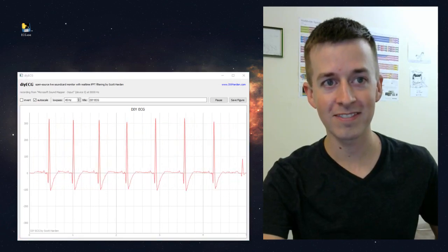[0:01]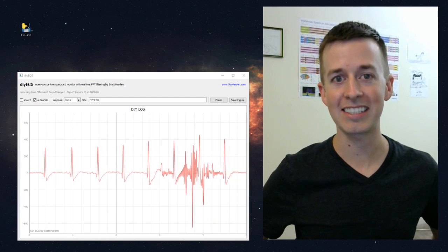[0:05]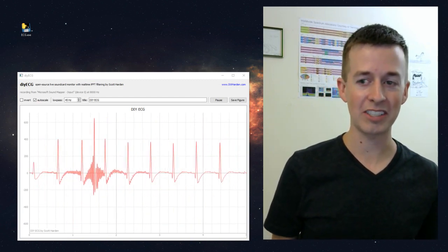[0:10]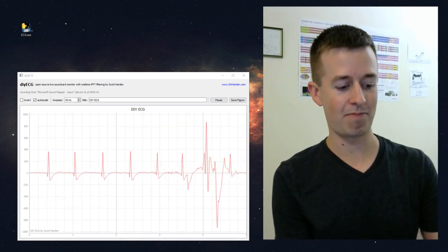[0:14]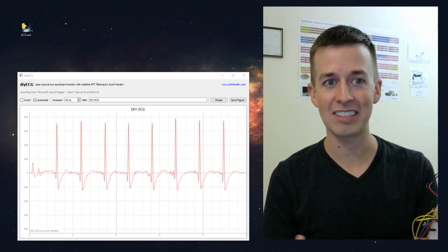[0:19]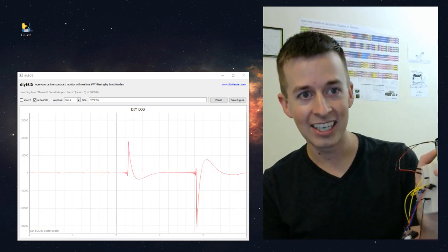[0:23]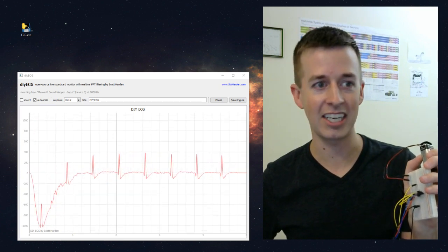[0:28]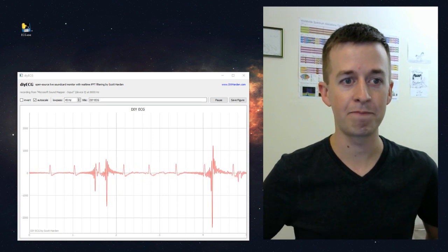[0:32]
Hi, I'm Scott Harden, and on the screen you're looking at my electrocardiogram, or my ECG. And this is a live recording of the electrical signals being produced by my heart. And as I move around and handle the circuit, you can see that sometimes noise gets in the signal, but that's extra proof that this is a real live signal. I can unplug it and plug it back in, and the vertical autoscaling takes a minute to do its thing. But this is a live signal looking at the electrical potential of my heart.
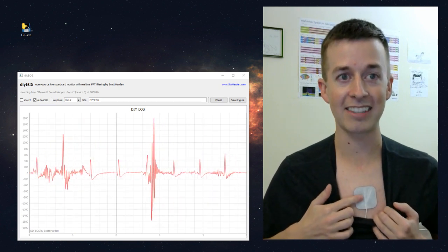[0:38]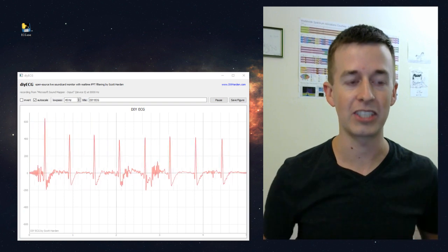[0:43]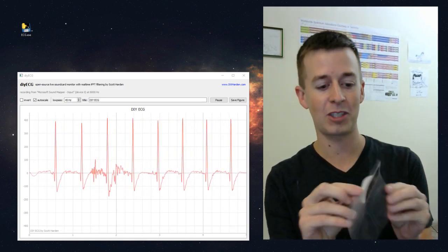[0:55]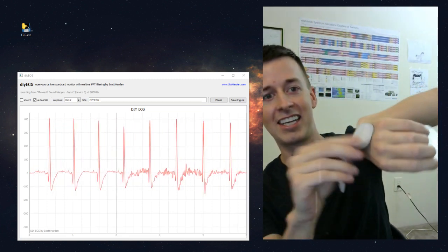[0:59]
It's accomplished by chest electrodes, which are actually muscle stimulator pads. So these normally are stuck on someone and the current goes through them to cause muscle twitching. But I use these pads because they're a convenient way to get an electrode to record electrical signals that I don't have to worry about taping onto my body. They're just adhesive and they stick. And actually, I have an extra one here. They come on these little clear plates, and you can sort of stick it to anything.
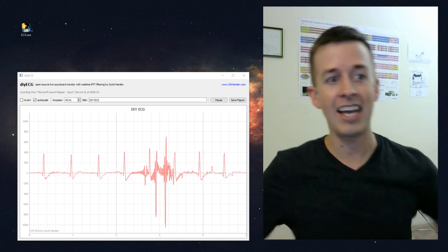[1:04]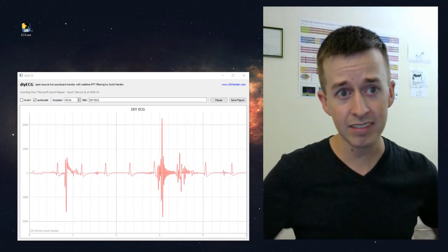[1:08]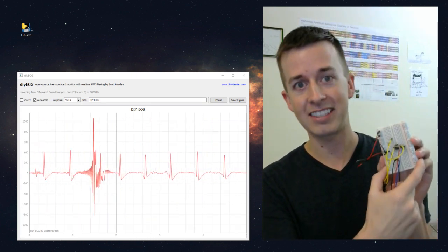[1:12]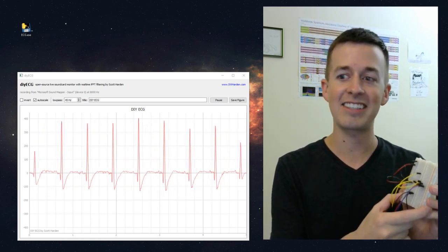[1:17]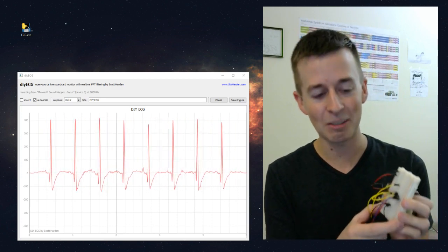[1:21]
So I'm using two electrodes, one on my chest and one on my side, and I have a third one that's really just a ground electrode on my right leg. And the output of those electrodes is being fed into this circuit here. And this is what I think is really interesting about this project. This is a surprisingly good ECG being produced by a really simple circuit.
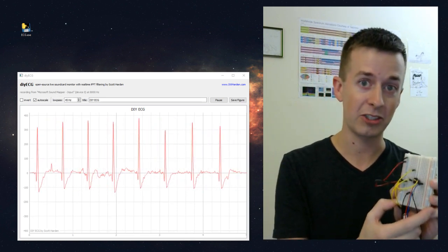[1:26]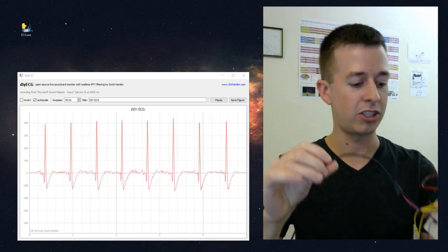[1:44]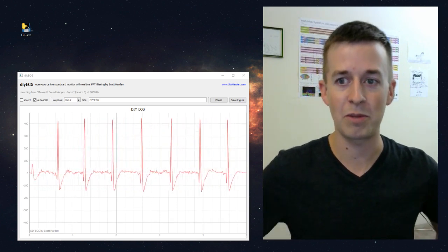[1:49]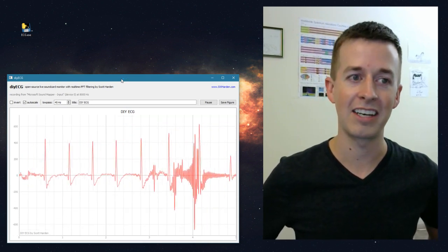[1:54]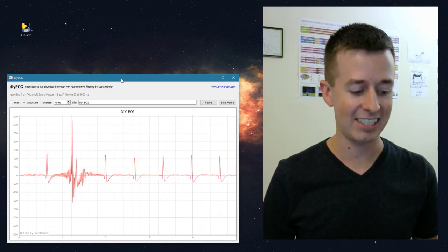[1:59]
This is a single microchip, an LM741 operational amplifier. And this is probably a microchip that you already have in your junk box. A single microchip and five resistors is all it takes to make an ECG that looks this good. And also it's being powered by a 9-volt battery. The output of this operational amplifier goes into this headphone cord, which gets plugged into the input of my sound card. So it looks like a microphone to the computer. And then here is the other interesting part of this project: I wrote some software in Python that does some math to the input signal to clean it up and make it really easy to see.
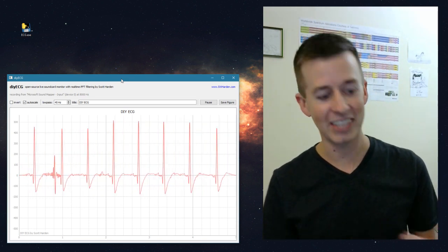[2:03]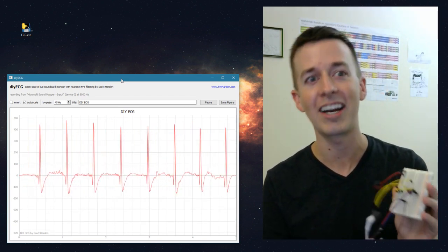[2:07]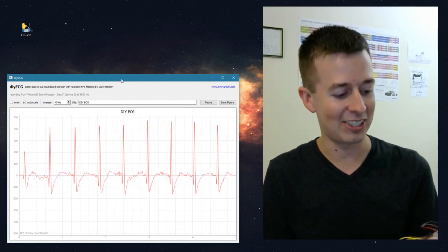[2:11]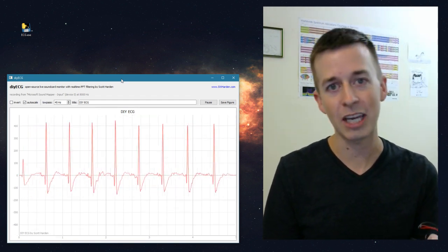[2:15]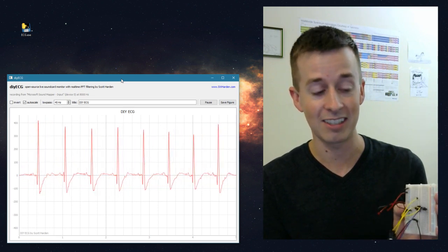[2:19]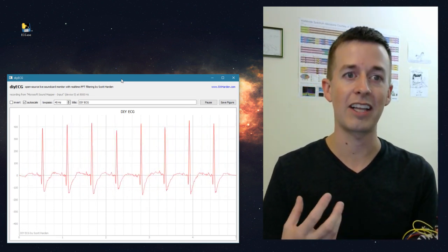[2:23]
Before I go any farther, I want to address the people who are probably screaming at me through the screen. They're saying, Scott, if you're going to work with small signals or analog, why are you doing this on a breadboard? And there's a lot of validity to that concern. If you're doing anything involving analog circuitry and especially amplification of small signals, you're not going to want to design a device like this on a breadboard. And that's true. And the reason is because there is a lot of noise which can be picked up by a breadboard.
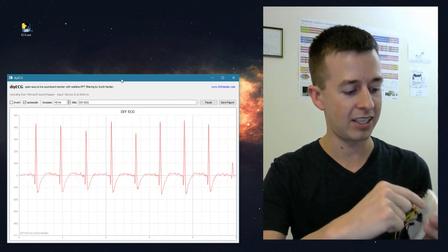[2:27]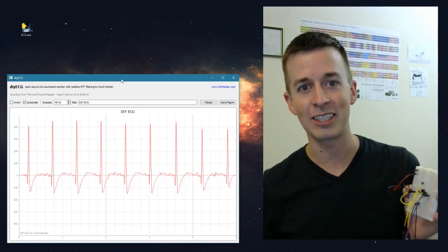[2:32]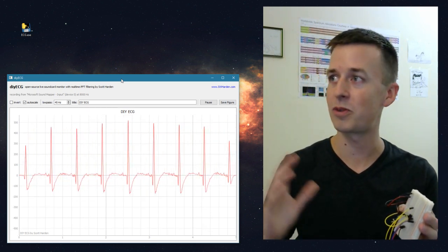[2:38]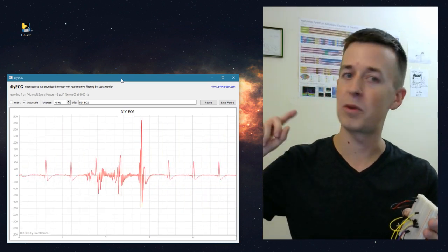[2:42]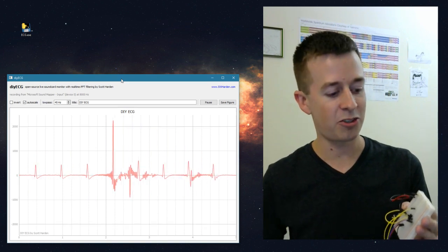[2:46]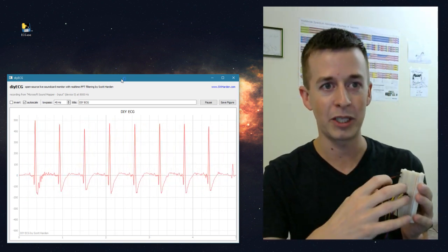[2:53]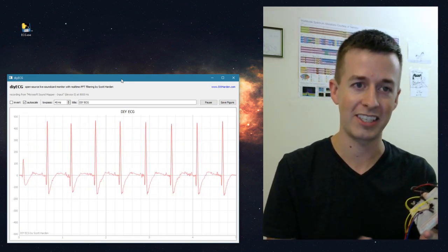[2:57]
This works by a bunch of horizontal metal rails here, which incidentally act like little radio antennas, and they pick up electromagnetic radiation. And the most prominent source of radiation in this room are electrical signals being emitted from the wires in the wall. Here in America, we have 60 hertz alternating current, so these horizontal rails act as little antennas, and they inject 60 hertz electrical signals into our input. And as a result, it amplifies a whole lot of 60 hertz signals that we're not interested in.
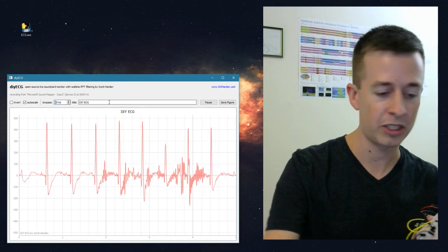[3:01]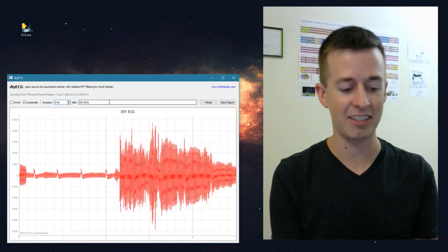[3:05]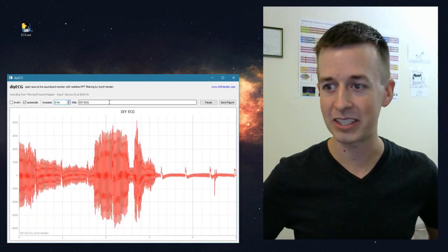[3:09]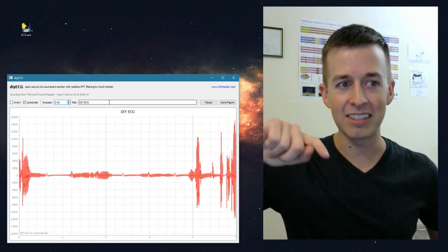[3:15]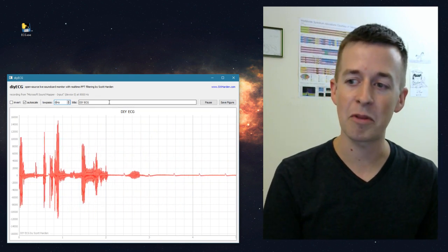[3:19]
So let's glance at the software, and if I adjust the software to low-pass filter at 0 hertz, we can see the actual data coming into the computer. And I'll stop handling the breadboard so it starts to get a little bit cleaner. And if you look really closely, you can see my heartbeat in there. My heartbeat is sort of where it goes up and down a little bit. But my heartbeat is mixed in with a lot of noise, a lot of 60 hertz noise.
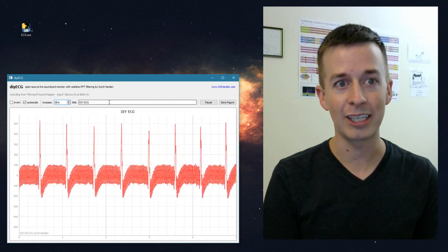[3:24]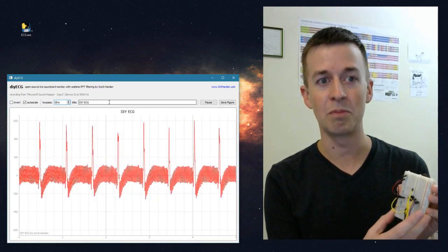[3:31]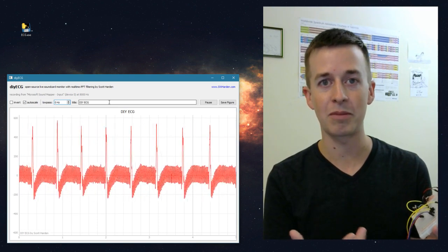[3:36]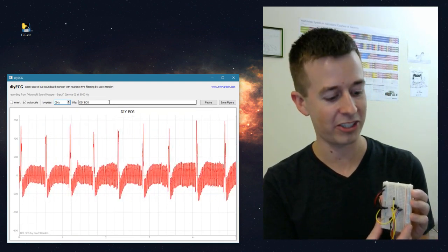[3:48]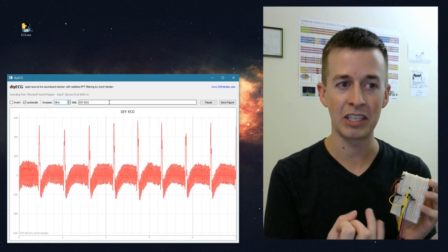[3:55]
And there are a couple ways that we could eliminate it. The most obvious way is to improve my construction techniques. But that wouldn't get rid of all of it. The next step would be to improve the circuit. There's a lot of work that we could do with multiple operational amplifiers or something called an instrumentation amplifier that would dramatically improve the quality of the signal coming out of this device. But I decided to take an opposite approach. Just as a personal challenge, I wanted to see how simple I could keep this circuit and have a really good ECG waveform on the output. So rather than improve the circuit with expensive or rare components or very carefully matched components, I made this kind of foolproof.
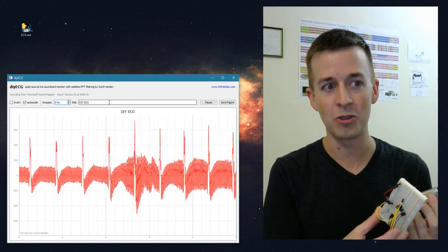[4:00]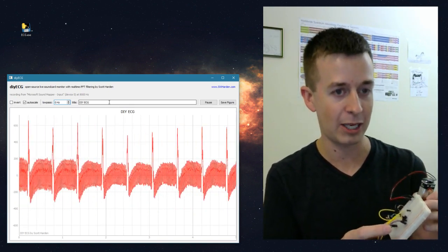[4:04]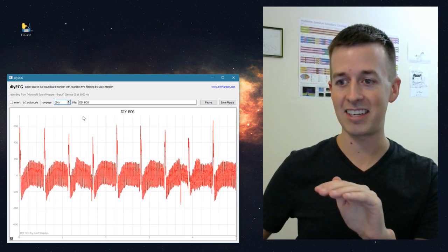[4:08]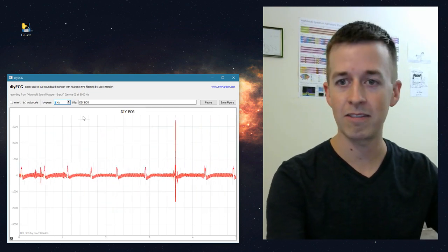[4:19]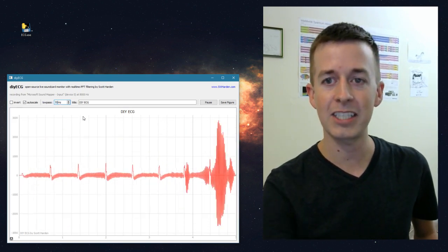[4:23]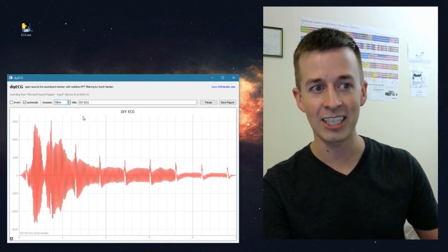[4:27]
You can probably use almost any components as long as you have a general amplification scheme. The magic is done in software. So I take the signal that you see here, and I convert it to the frequency domain with a function called FFT. And then I eliminate the high frequency components and convert it back to the time domain. And when I do that, I can adjust a cutoff frequency or a low pass frequency. So if I make it 70 hertz, then it allows everything under 70 hertz. So we can see the ECG, but also a lot of that 60 hertz noise.
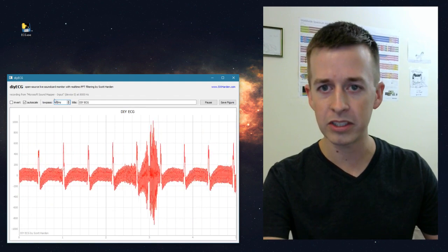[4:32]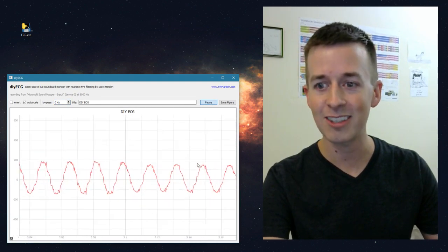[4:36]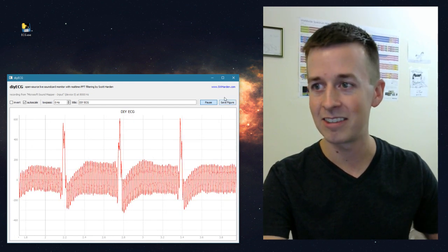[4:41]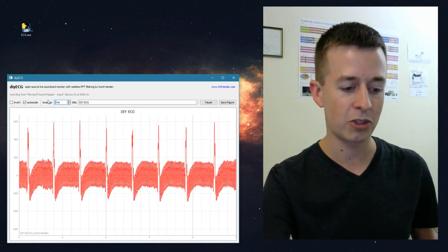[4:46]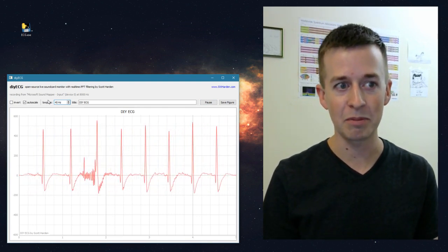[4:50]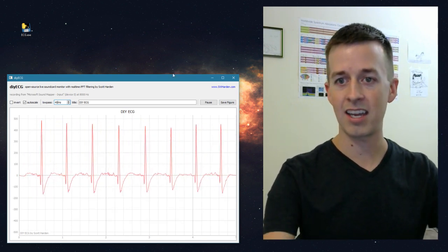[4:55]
And just to show you a little bit more clearly, I'm going to pause this signal and zoom in on it. So you can see these really are more or less 60 hertz sine waves mixed in with the ECG. So I'll take pause off, and now I'm going to low pass filter it to about 45. Now most of our 60 hertz noise has been eliminated, and the ECG comes through. So I'm going to go ahead and take a picture here, so I'll call it Scott's Video demonstration and save figure, and I can stick that up on my website.
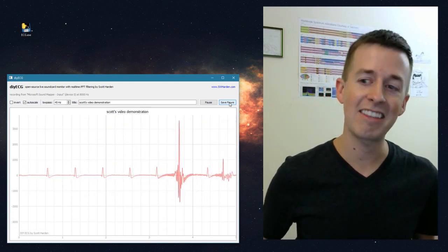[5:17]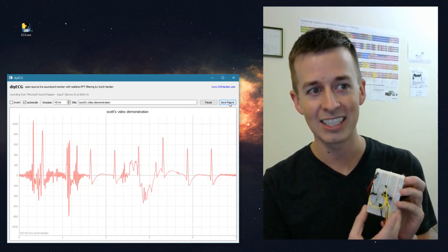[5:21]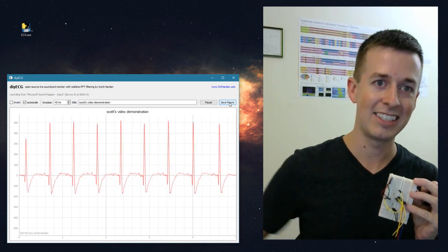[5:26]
I'll talk in a little bit more detail in a few minutes about exactly how this works, but I thought this is pretty cool. Again, there's nothing new about an electrocardiogram, and it's even a do-it-yourself electrocardiogram. The thing that I think is so interesting about this project is how simple of a circuit we can build to produce such fantastic output.
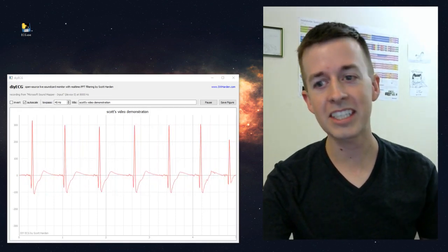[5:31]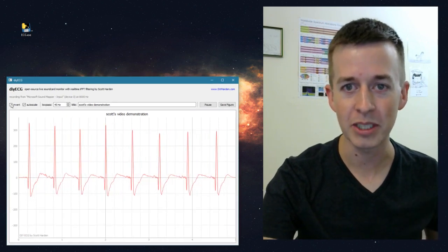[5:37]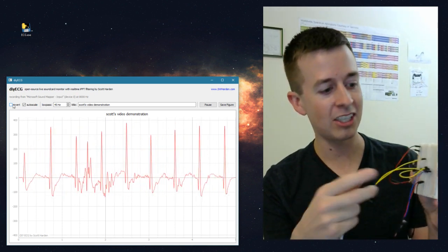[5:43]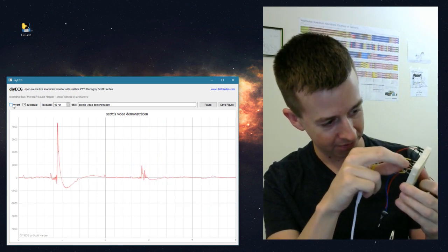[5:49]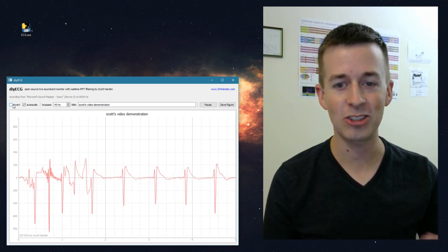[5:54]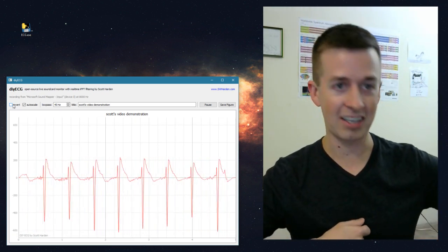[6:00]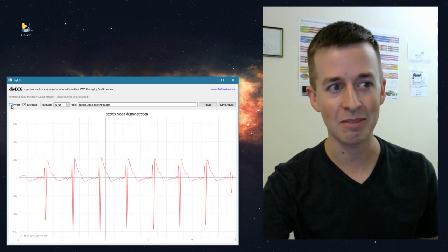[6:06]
Now I'm going to take a minute just to talk about the software. Since this is the first time I've shown the software to anyone, I just want to introduce it pretty quick. First of all, the chest leads, which go in here, could be reversed. So I'm just going to go ahead and reverse them on the breadboard. And when I say that they could be reversed, I mean that I don't specify put this chest lead here, put this chest lead there. And the result, if you reverse the chest leads, I could have done the same thing by unsticking them and switching them, is that your ECG will look upside down. So I added a button that says invert, and it does exactly what you would expect it to do. If you invert it, it swaps the orientation.
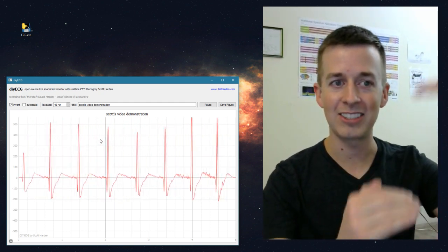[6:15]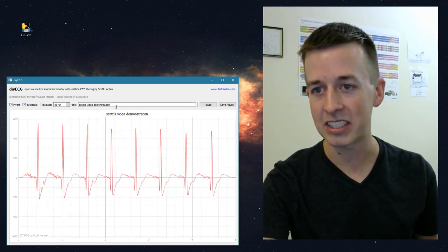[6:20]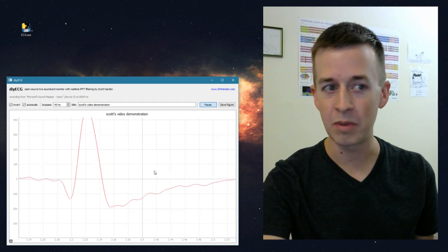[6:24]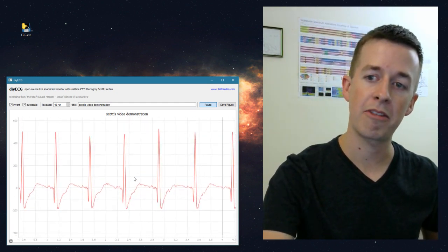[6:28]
Autoscale makes pretty good sense. If you leave it unchecked, then it doesn't automatically change the vertical axis, even if noise comes through or something like that. Low pass, we've already looked at. The title makes sense. And if we pause it, you can sort of zoom in to any part of the signal. I will mention that I'm doing this with the QT4 window libraries, and I'm using PyQtGraph, or QT graph or something like that to do the graphing.
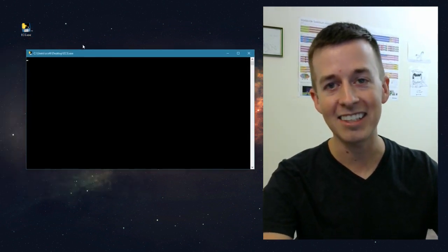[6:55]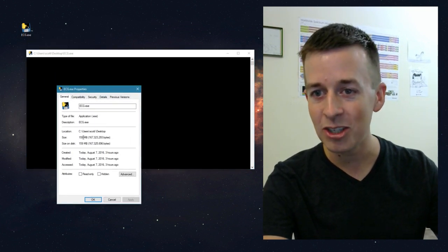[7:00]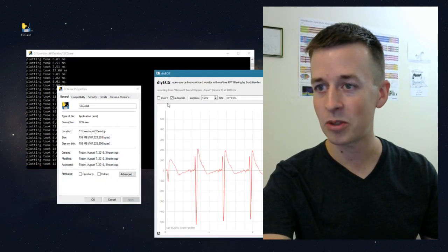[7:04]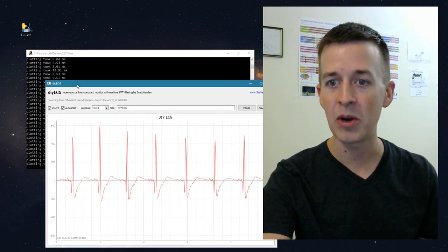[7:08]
And I toyed with the idea of distributing this as an EXE program for Windows users, but I really want to keep it stuck to just distributing the Python source. And the reason why is because here's an EXE which I made, and I used the PyInstaller program to generate it, and it takes a really long time to load. It's because this EXE is huge. It's almost 160 megabytes, and it's so large because it packs the entire Python interpreter with it.
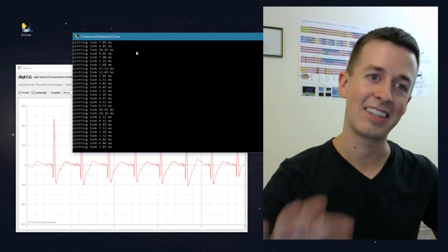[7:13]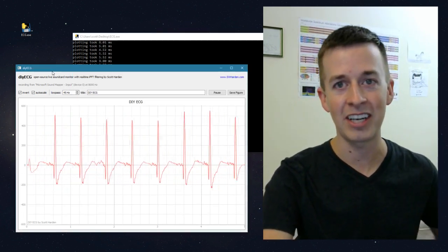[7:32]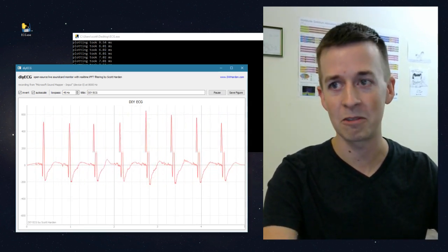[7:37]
So it's not just a 4 kilobyte Python script like the actual Python script is. It's the 4 kilobyte Python script plus the Python distribution plus all of the libraries I'm using. PyQT4, NumPy, SciPy. There are a couple doozies in there that end up making it hundreds of megabytes. So it's not really convenient for me to distribute the executable. I haven't decided whether or not I'm even going to make it available, but if nothing else, the Python script should work for everyone. And anyone who's using Linux can probably figure out how to get the Python script to work on their own.
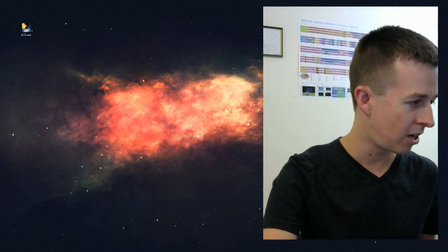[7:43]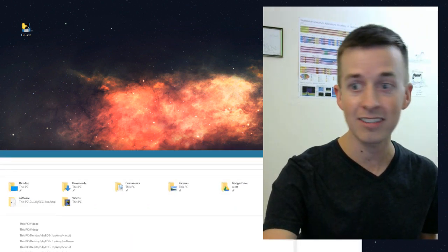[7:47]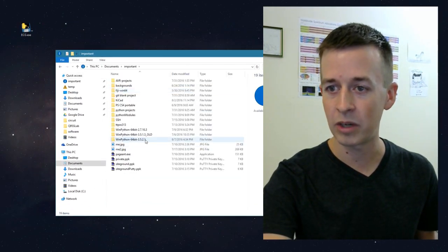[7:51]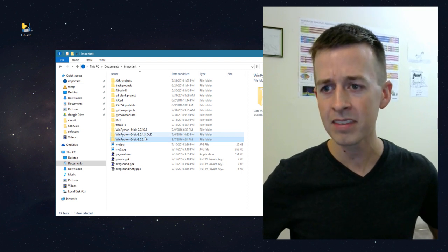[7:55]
But I did want to take just a second to make sure that anyone who wants to run it can figure out how. So here is where I've installed WinPython. In WinPython, you can just Google WinPython. Figure out how to download the 64 or 32-bit version, whatever matches your computer. But I developed this specifically to work with an out-of-the-box distribution of WinPython.
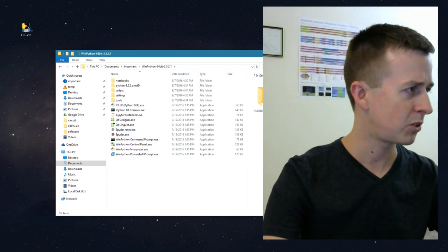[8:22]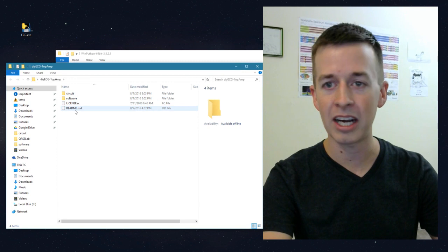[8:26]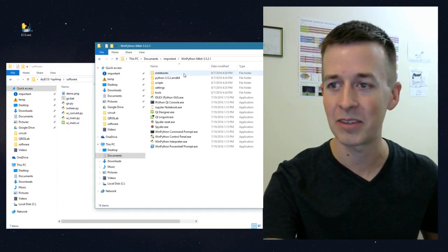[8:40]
3.5.2.1. And it would probably work with any WinPython version 3, but I've tested it with WinPython 3.5.2.1, and if you run it, it should run right away. So I'm going to demonstrate that by showing you here. This is the project that you get straight from the GitHub. If I go to the software folder, this program is go.py. And if you just double click it, it will be run with whatever Python is set in your system path. We don't necessarily want to do that.
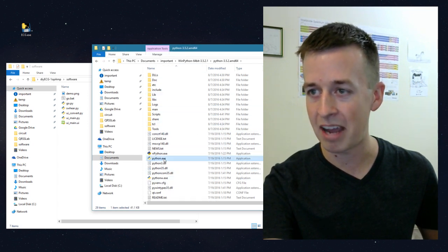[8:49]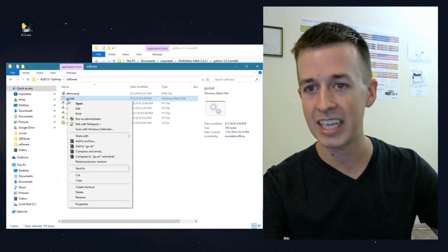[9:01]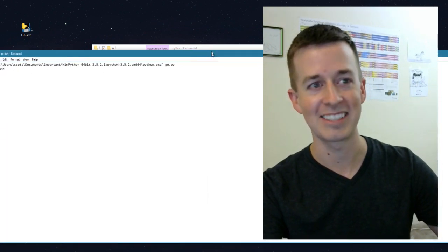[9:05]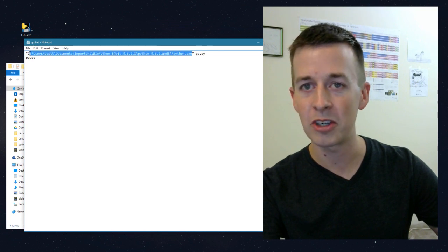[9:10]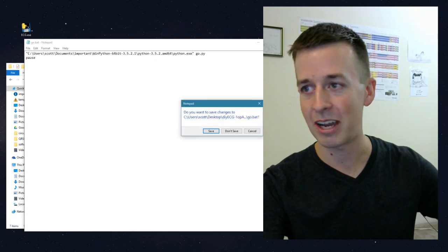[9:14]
On the other hand, if you open up your WinPython distribution, the actual python.exe lives here. So let's see, there's the python.exe. So if we point this path, /python.exe, that's where we're going to want to run this program from. So we can edit this batch file here. I'm using two displays and only one of them is being captured by the screen. All we have to do is make sure that that path matches in the batch file. And that's all that you have to do.
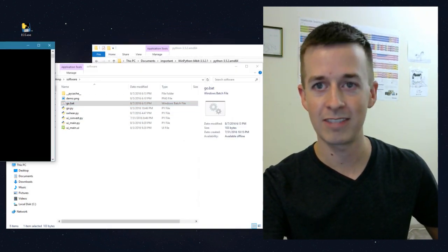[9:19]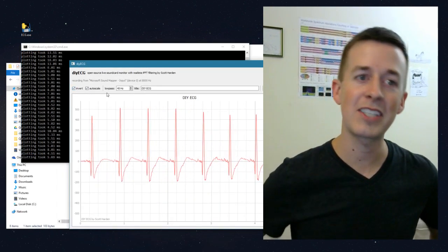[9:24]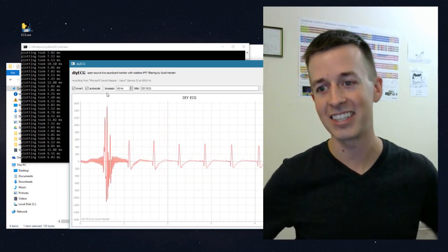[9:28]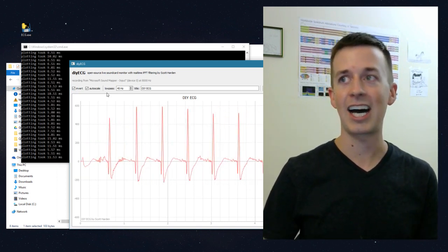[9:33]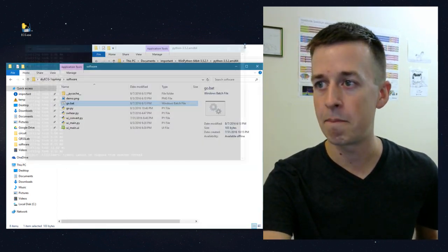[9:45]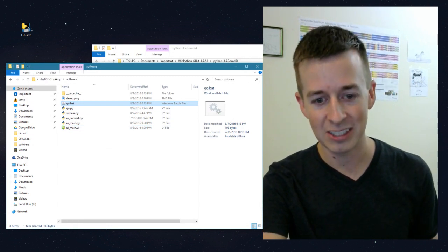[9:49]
Now I'll hit save. So if we double click go, it popped up on my other screen, but it just starts right away. So anyone who's never used Python before, I'd recommend giving it a shot. Don't be too afraid. You saw how easy that was. I would recommend not running this from inside of an interpreter like IPython or Spyder or some other thing that gives a bunch of rich features. These GUIs tend to crash it sometimes, so just make sure you run it straight from the command line and it should run okay.
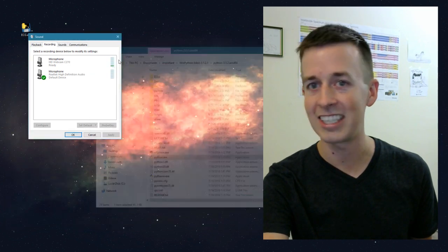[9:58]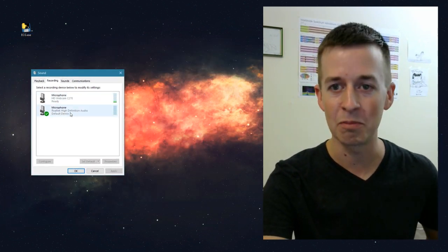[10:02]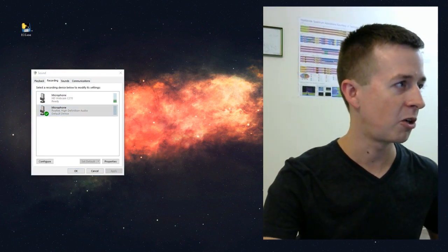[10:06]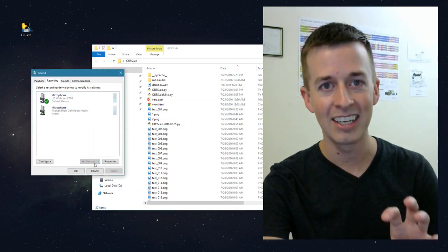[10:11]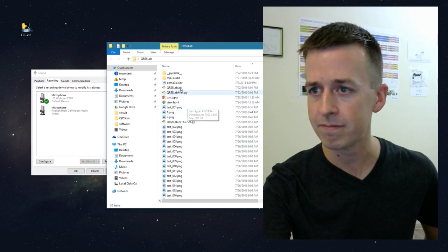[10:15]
One more thing I'll mention is that this software is designed to be run from your default microphone. So I know you can't see what I'm doing, but if I look at my recording devices, you're probably used to seeing this screen here. I can have more than one microphone, but whatever I set to my default, that's what's going to be used. So if I hook up a wrong microphone, I'll just show you what happens. I'm going to set my audio microphone, the one that you can hear me on, to the default, and then I'll run the software.
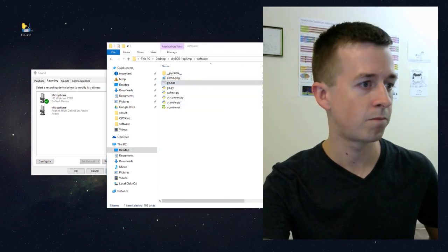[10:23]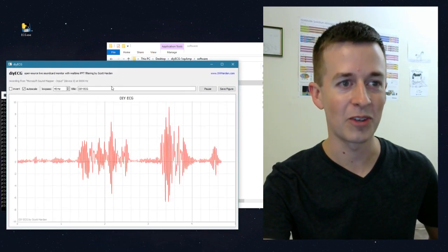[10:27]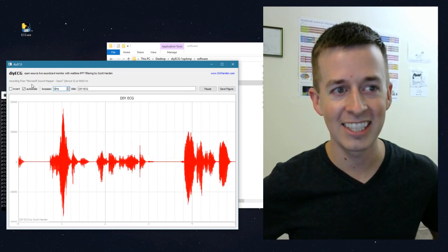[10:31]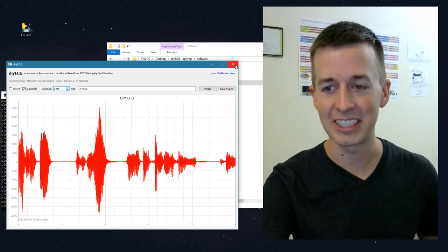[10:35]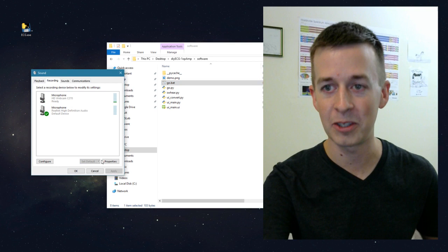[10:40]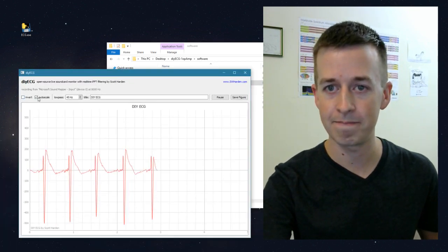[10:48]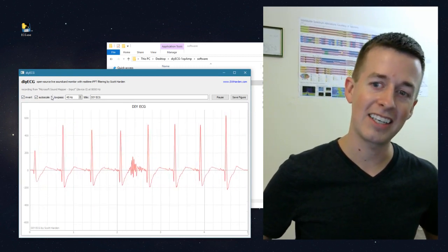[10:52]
Okay, and this is what happens when I'm running on the wrong microphone, and I'll turn it to 0 Hz. So now you can actually see this is my voice, and it's being plotted in real time, and that's clearly a problem. I've got to close the software, set the correct microphone, the one that my circuit is attached to, and then when I double-click go, this is what pops up. And that's what we need to do. So I think that's going to be enough to get anyone started who actually wants to build it.
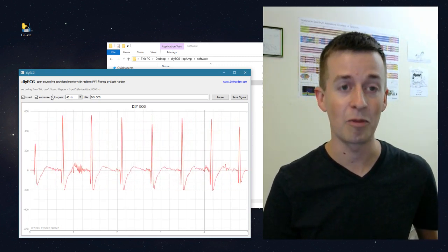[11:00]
I've gotten a lot of emails over the last several years of people who have tried to recreate my ECG machine, one that I posted on the internet a long time ago, and this seems to be a big struggle. So I hope that with the software, I might have eliminated some of that for Windows users.
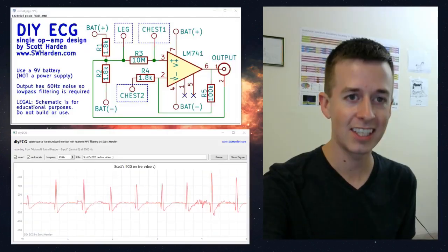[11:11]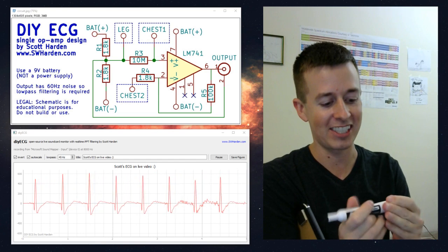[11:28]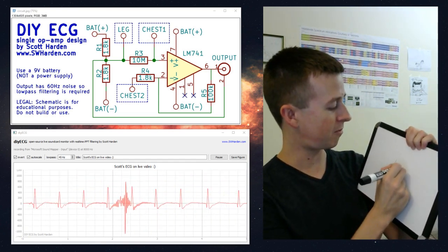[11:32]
Let's take a minute to talk about how this circuit works. I have the schematic shown here, but this schematic's a little bit hard to read because it's all clustered together. I put everything close together so it'd fit easier in a JPEG. But to run through it briefly, I'll use a dry erase board that makes it a little bit easier to understand. So the core of the circuit is an operational amplifier. An operational amplifier is shown like this, with a non-inverting and an inverting input. And usually you have an in and an out.
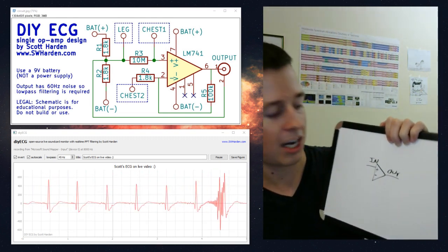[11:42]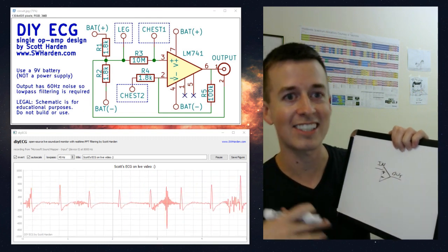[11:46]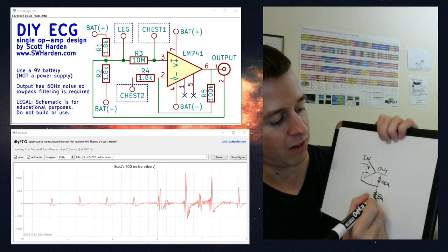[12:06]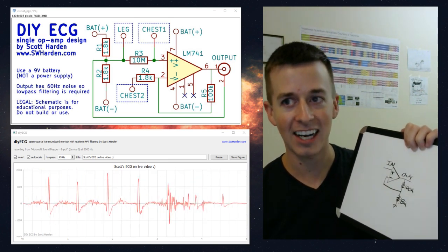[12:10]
One of the most common uses for an operational amplifier is signal amplification, so to make a small input a larger output. One of the configurations that does this uses a voltage divider like this with respect to ground. The values I've chosen are 100k and 1.8k. The reason I've chosen those values is because the ratio between the two is about 50, so that gives me about a 50 times gain from the input to the output.
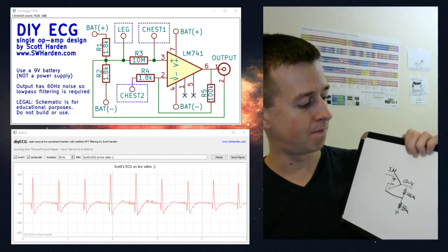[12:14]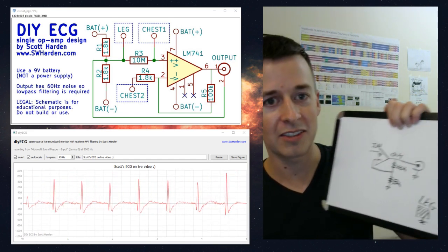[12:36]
This obviously goes to the computer, and I will take a moment to note that it's with respect to ground. So the microphone input of my computer with respect to ground is what the output of this device is. I can start introducing my electrodes. So this is the leg electrode, and I ground my leg. This is equivalent to using a wrist strap when you're grounding yourself or something like that. I'm just grounding my leg instead of my arm.
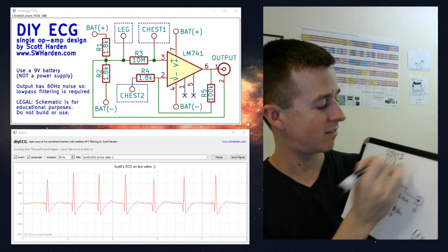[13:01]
It's farther away from my heart, and it does a better job of not quenching the signals from my heart. The signal being amplified is this, and I can draw a lead here, and I'll call it chest 1. So if you were to build this device, oh yeah, I've got to add power. So it's being powered from a battery, so I'll call it plus and minus right there.
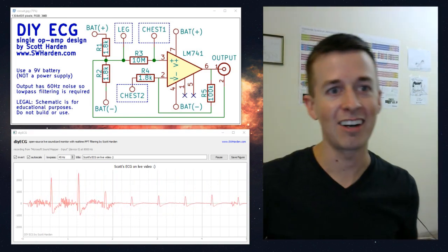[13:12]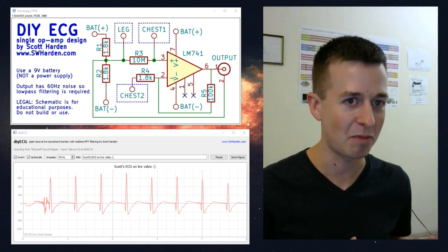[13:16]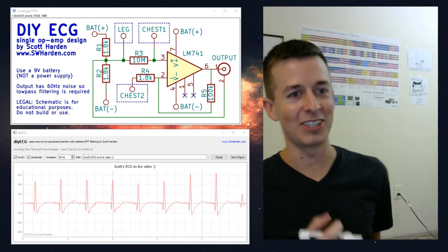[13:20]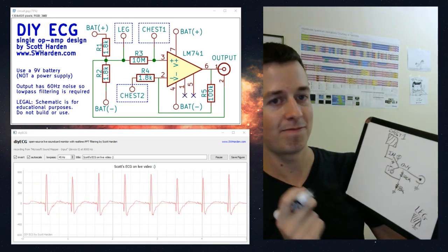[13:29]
And actually, I'll take a note right now. Power this device from a battery. Use a 9-volt battery. Do not use a bench power supply. We'll talk a little bit more about safety in a minute. But it's just really important that you do this from a battery, partially because we need the ability to swing our power supply voltage. We need the ability to float our battery at a voltage range. We'll talk about that in a minute.
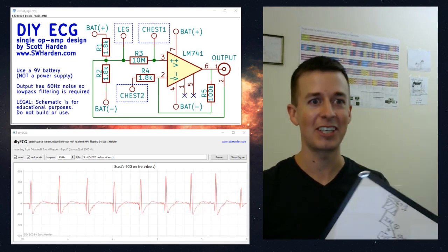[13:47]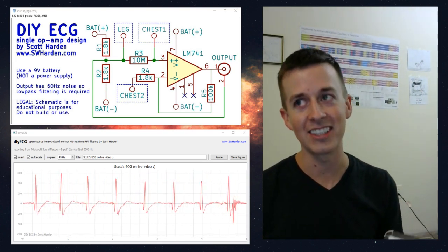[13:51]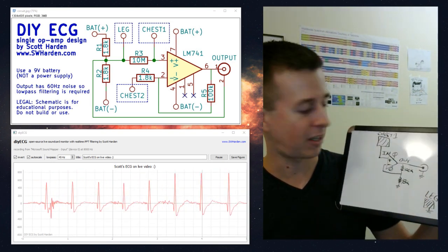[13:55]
But if I were to build this circuit, it would actually work. All I would need is my leg and my chest and two resistors, and it would output an ECG. And I actually have a design like this on my website from several years ago that works, and it doesn't work very well. You can see the ECG, but that's about it. The fact that it works at all is kind of a hack. But this is all that you need to have a basic amplifier. But this wouldn't give me the quality of signals that I want.
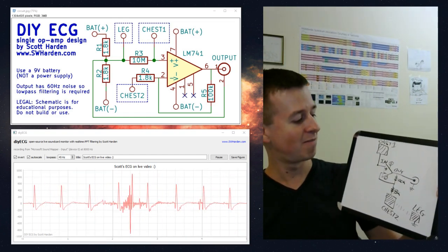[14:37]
I mean, if you see on the screen, this looks really good. So the way that I generated that was I detached this from ground. So I'm going to remove the ground right there, and we'll revisit that later. Actually now's a good time to talk about it. I replaced that ground with another lead, chest 2. And instead of grounding that directly, I'm sort of indirectly ground, because I ground my leg, and I'm connected to my leg, hopefully. I haven't messed up that bad. I'm connected to my leg, so my chest is ground. So this lets me have a pretty good ground situation.
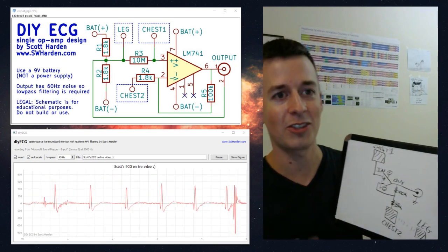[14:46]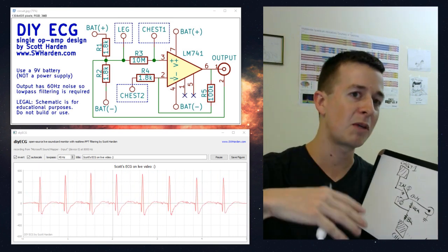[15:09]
Although there's a problem. Technically this should work, but this would only work if your ambient voltage is sort of perfectly in the range where this can amplify it. This doesn't do a good job at amplifying signals as it approaches the plus or the minus rail of the amplifier. The amplification is so large that it can only amplify signals in a very narrow range of voltages, essentially the midpoint between the plus and the minus. So we're going to add a little bit of circuitry to pull the voltage of our body to the halfway point between the plus and minus. And when I say that, that's not actually what it's doing. It's not changing the voltage of my body with respect to the battery. It's sort of floating the battery to match the voltage of my body because I'm grounded.
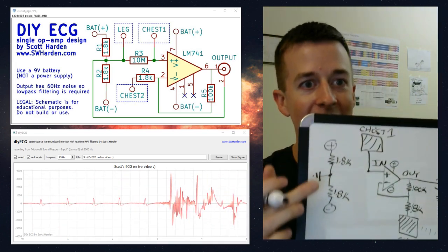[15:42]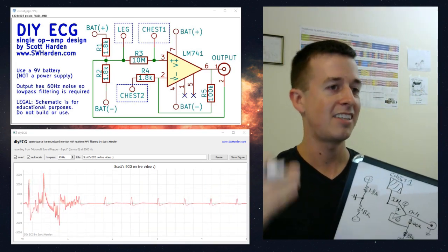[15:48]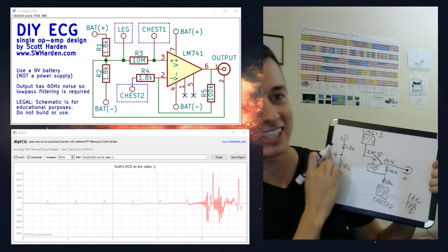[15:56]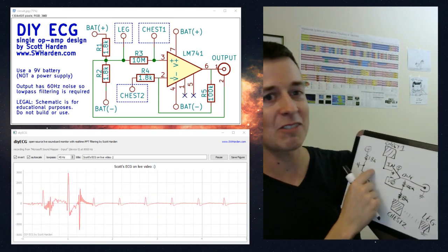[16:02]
So let's talk about that again. There's the plus terminal of the battery. Here is a voltage divider and the minus terminal of the battery. I think I used 1.8K resistors for both. And then I'll add a ground symbol here. So just by doing this, I move the voltage of the battery. So instead of being 0 volts and 9 volts, it's negative 4.5 volts and plus 4.5 volts because it's centered at ground. So now we're halfway there. We have our body about where we want it to be. And actually, no, we don't have our body where we want it to be. We have this voltage where we want our body to be.
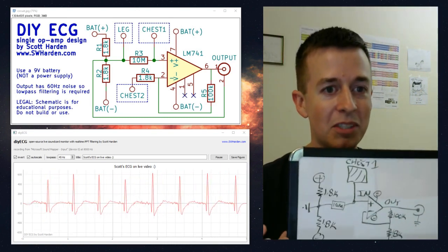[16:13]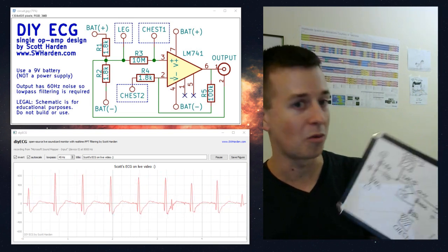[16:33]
And the way that I connect it to my body is through a very high value resistor. This is a 10 mega ohm resistor. And there are a couple reasons I want this to be a high value. Although it would make sense, you wouldn't want to connect yourself directly to a power source through a low value resistor. That's not the reason why. The reason why is if you had a straight connection to this chest lead, you would just make your chest lead this voltage, and your chest lead wouldn't be free to oscillate with your heart. So by connecting it with a 10 mega ohm resistor, it keeps your chest approximately in the right region, halfway between the plus and minus, so that the amplifier can amplify it, but it doesn't lock it down too much.
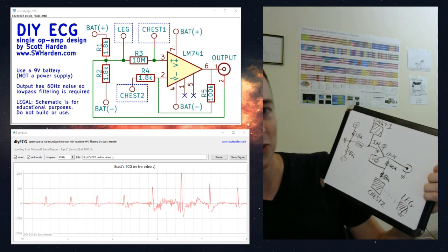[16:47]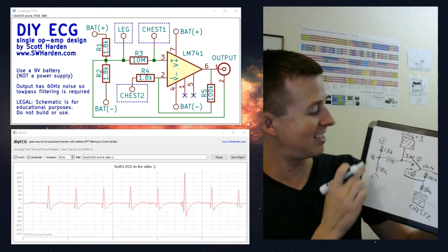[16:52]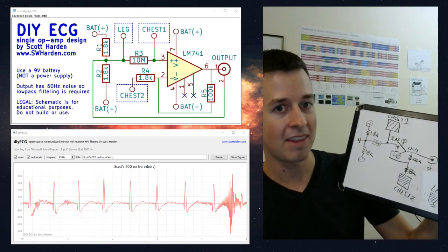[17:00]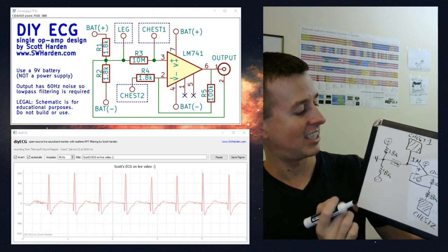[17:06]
So I think this is actually the whole circuit. We're done here. And just keep in mind, in your imaginary mind, that this halfway point between the plus and minus is ground, which is the leg. So your leg point is this point. And everything is kept near ground with this circuit here. And the voltage of the battery, plus minus, is centered, so the ground is the halfway point. So now with one operational amplifier, an LM741, and 1, 2, 3, 4, 5 resistors, I have a surprisingly good ECG on the output.
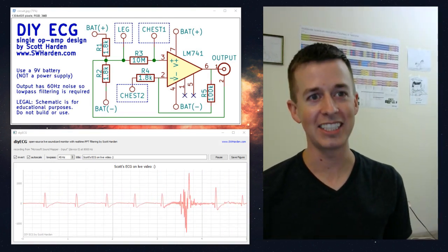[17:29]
So let's take a moment and talk about the safety of this. Anytime we build a circuit that you connect to your body, you always have to take a little bit of time to really consider what you're actually doing and make sure you don't do anything potentially dangerous. I think it goes without saying that you shouldn't be connecting yourself to a bench power supply. I feel a lot more comfortable doing this with a floating battery, and especially a 9-volt battery.
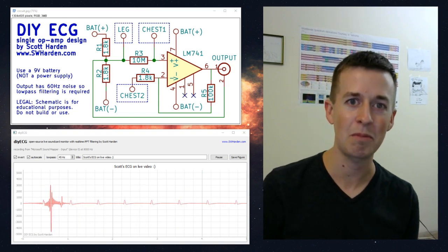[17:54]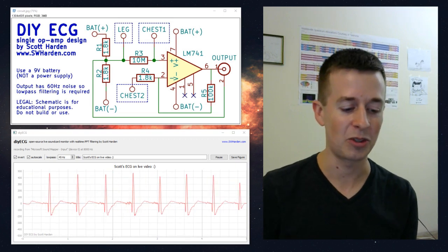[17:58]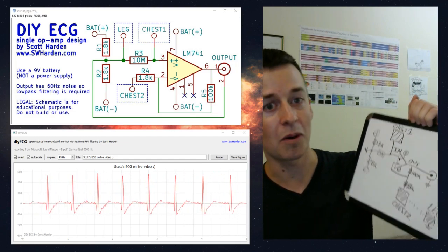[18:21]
But with all that being said, 9-volt batteries, even in themselves, can be really dangerous. A stun gun runs on a 9-volt battery. So just because it's a 9-volt battery doesn't mean it's safe. Let's take a little closer look at this and contemplate our safety. And again, I'm not saying that this is a safe device. Don't wear it all day, don't go to sleep in it, don't put it on other people. If you're going to build it, you have to build it at your own risk and pay close attention to what you're doing. However, when thinking about this from a safety perspective, we consider what we're attached to.
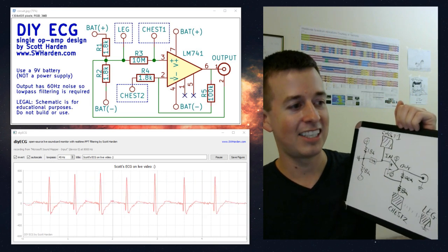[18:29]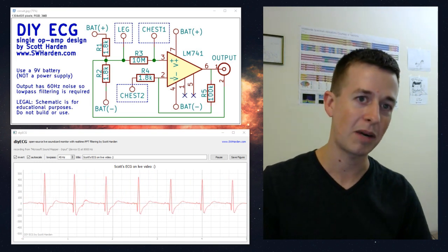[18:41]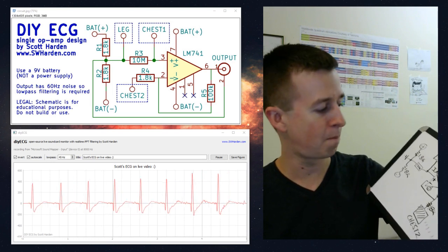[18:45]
This device attaches to us in three locations. The first one is the leg for grounding ourselves. That's generally okay. You think about what a grounding strap does if you put it on your wrist. I feel comfortable being grounded. The time when grounding is a concern is when you're also dealing with some high voltage or high current possibilities with respect to ground, which we're not really doing here, especially because we're using a battery. And there's just not a whole lot of voltage or current that's going to be generated in this configuration.
Another thing to consider is what you're actually connected through. So this case is probably the simpler one. This chest lead is connected to the battery through a 10 mega ohm resistor, which is an incredibly high resistance. So this is not going to be capable of doing very much. And it's also connected to the operational amplifier, but it's connected to the input. This is a high impedance input. So this is really close to floating in all directions. It's going to be very hard for anything nasty to come out of this chest lead.
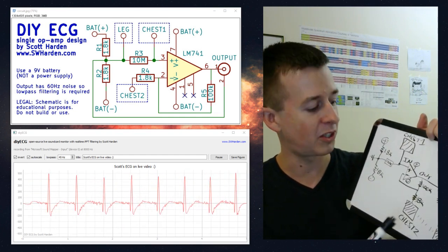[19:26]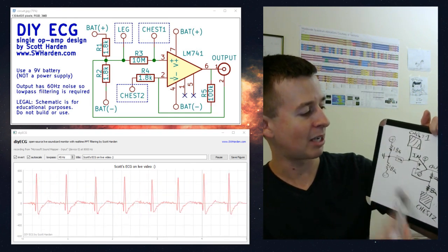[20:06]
A slightly more concerning one would be this chest lead, because this does experience, potentially, some of the output current that could be coming through here, or that could be coming from the computer, coming in through the microphone cable. But again, kind of for the same reason, I feel safe with this configuration because we're going into the high impedance inverting input. Probably the most scary thing is that we are connecting through over 100K of resistance to the output of an operational amplifier. But again, that's with respect to what? With respect to this negative and positive voltage, which we aren't really clamped to anyway. So all in all, I'm not particularly concerned about this circuit.
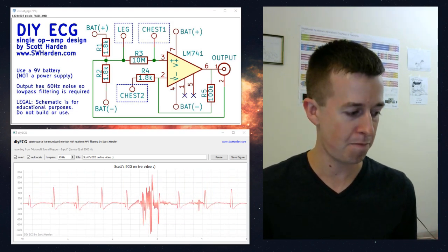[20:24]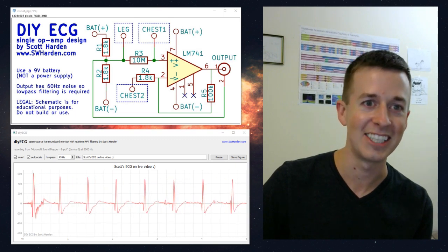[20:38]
It's very easy when we talk about the safety of an ECG machine like this. A lot of people can come out and say, oh my gosh, this is dangerous, and this is why, this, and this. And it was actually really interesting. In the past, when I posted similar projects, I get a lot of feedback, kind of, in both directions. Some people say that it's meaningless, small voltages and currents, and are sort of proposing that it's extremely safe. And some people that are truly concerned about dying because they point out the fact, which is true, that milliamps of current can kill, especially if they're oscillated in a certain way. And I've also heard some people equate it to putting headphones in their ear and say they're getting about the same amount of electrical current from that.
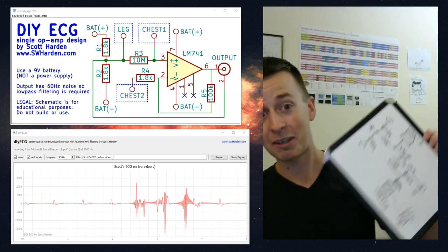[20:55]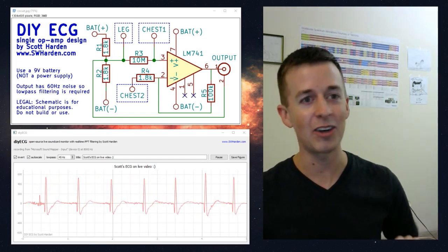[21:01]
So all in all, I feel comfortable with this design, but if you have any specific input about the safety of this design, I would love to hear about it. Go ahead and write it up in an email and send it to me, and I'll post it on my website.
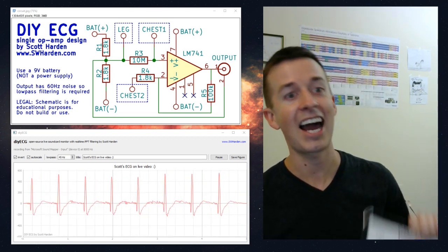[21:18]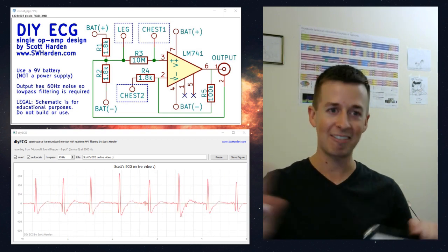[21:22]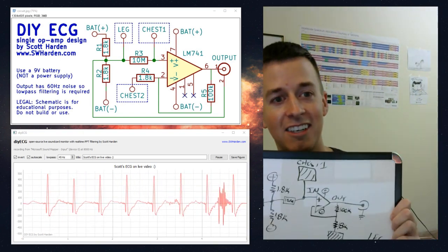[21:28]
So I definitely would appreciate your input. But again, don't build it if you're not comfortable with it, and I don't think in any case you should hook it up to yourself. I'll probably play it safe and say that all of this information is for educational purposes only, and none of this is actually intended to be built by anyone, and I'm advising you and everyone not to connect it to yourself. But I would appreciate hearing from you if you have any feedback on how safe you think this really is. Thanks.
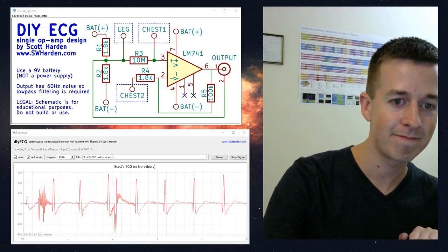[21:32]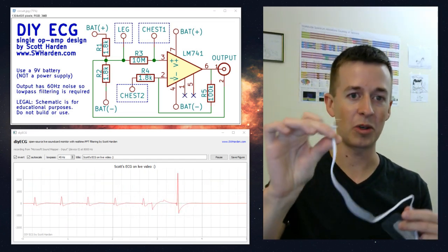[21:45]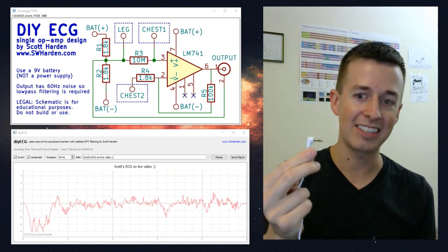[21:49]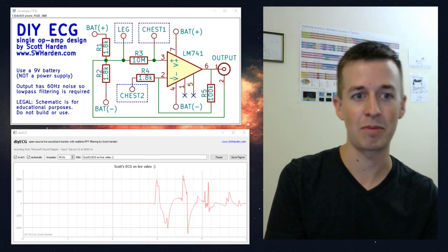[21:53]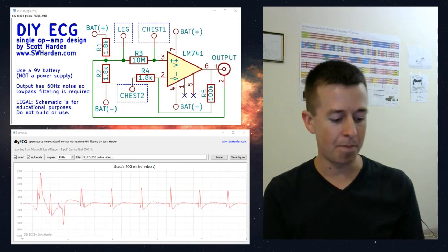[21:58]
A couple notes on the electrodes that I'm using. I am using these muscle stimulators, and I got these from Amazon.com. They hook to some commercial equipment, and they also have these really convenient little cords. On one end, it's a connector that goes into the stimulator, and on the other end, it's kind of a headphone connector. So it makes it easy for me to connect to my electrical devices because I have those headphone connectors on hand. I don't remember the exact price, but I'll have a link to these on my website.
And all electrodes like this work by making electrical contact with your body. A lot of times, just surface-to-surface contact isn't enough. It helps if you have some type of gel in the middle that permits the passage of ions. Liquids or gels that are rich in ions, like sodium and chloride, permit the passage of electricity. And I don't want to go crazy, but if you taste these, they taste salty. And that's why. They have a little bit of gel on them that is probably chloride-rich.
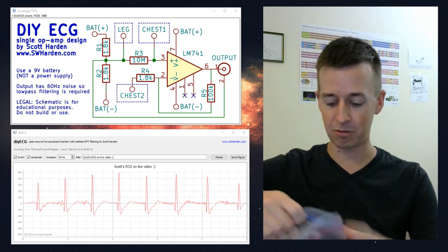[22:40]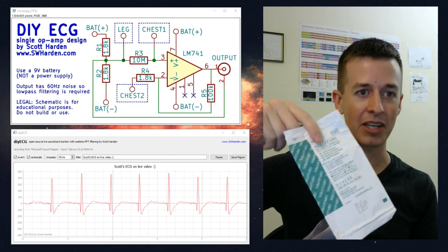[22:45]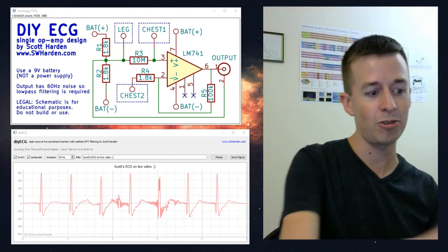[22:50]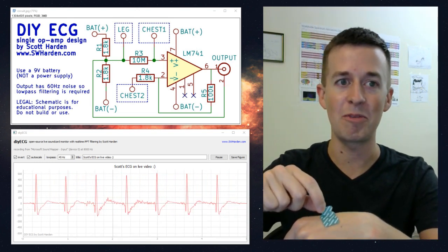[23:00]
Another type of electrode that I used to use, and I still have a bunch of them left over, are these. They're Nikotabs, and I got them on eBay a really long time ago, but I have a huge number of these. They peel off like this, and they are very adhesive, but they only actually stick for a few minutes. I wouldn't want to use them for a long period of time. The muscle stimulators that I'm using stay on all day. These only stay on for maybe 20 or 30 minutes, and they don't do a good job if I move around too much. They're really sticky, but only for the first time.
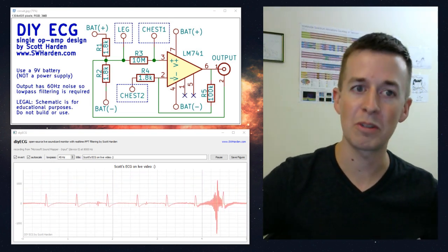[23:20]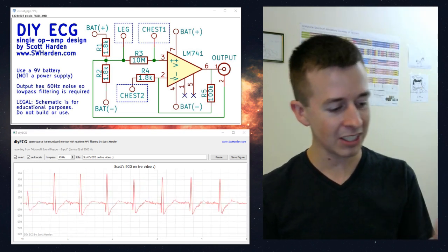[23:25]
But they are electrically conductive right here, so I can gator clip onto them if I want to get the electrical signals. I'll probably post some pictures of all these being used on my website, but I'm not going to do it for the YouTube video. So that's another option. If you don't have any of these on hand, you can actually make some of your own electrodes. And I've done that here.
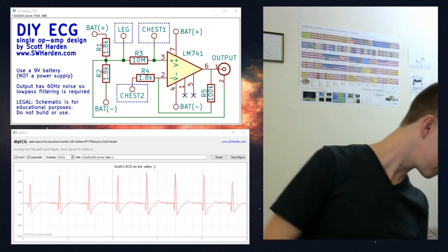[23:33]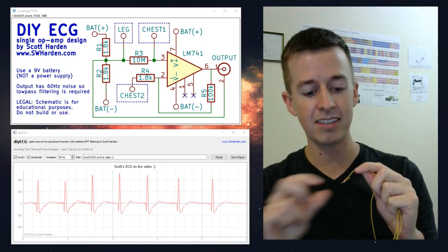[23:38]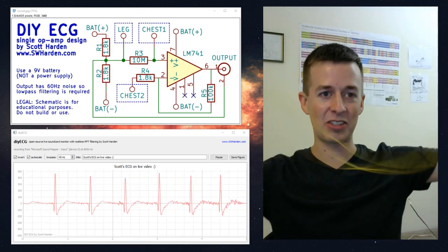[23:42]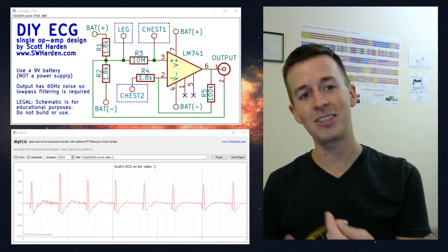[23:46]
These are three pennies. And the pennies have been soldered to the wire. And I can attach this wire right into the breadboard. So instead of the three electrodes that I'm using now, I can use these three pennies. And since I don't have this chloride paste, I can do something pretty good. And that's adding a drop of conditioner, like hair conditioner. Sometimes moisturizer, pretty much anything that is a commercial gel usually has some ions in there, some electrolytes that can permit the passage of current.
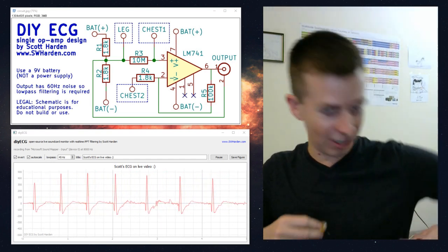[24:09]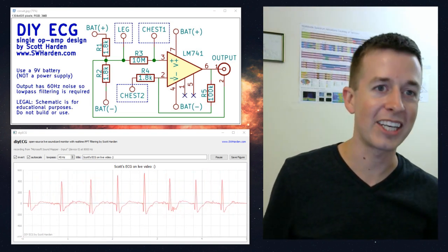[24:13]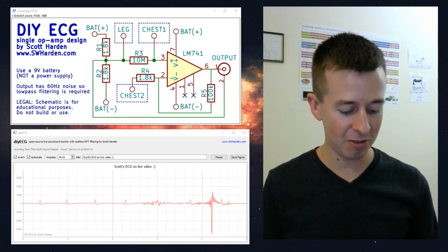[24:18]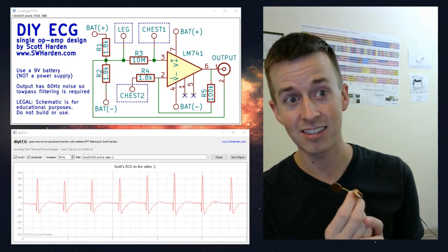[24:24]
So it does okay if I just tape the pennies right to my chest. I can do them sort of like this. And they do okay, but they definitely do better if I add a little bit of hair conditioner. So even if you don't have professional electrodes, you can make something like this, and it only costs 3 cents.
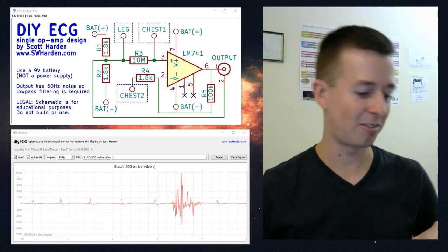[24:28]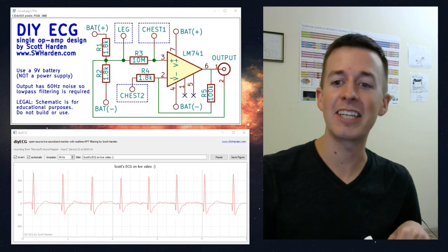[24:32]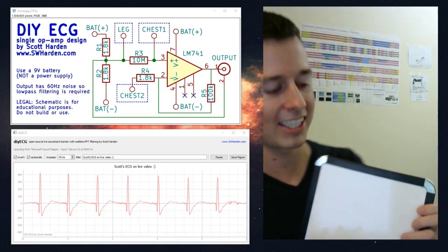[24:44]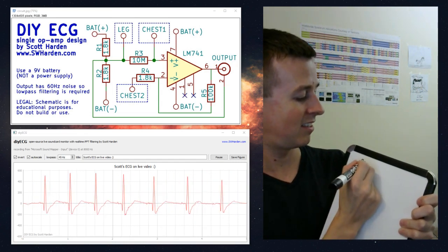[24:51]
Let's talk about the software real quick. The software on the screen does kind of an interesting thing that I haven't seen any other software do. And the way that it works is, and I'm going to try to describe it in words that you can understand if you read the code. It's only maybe a page of code. It's not that complicated. But it reads a very small amount of PCM audio data. So I'll just call that PCM. I'll make the line a little bit bigger.
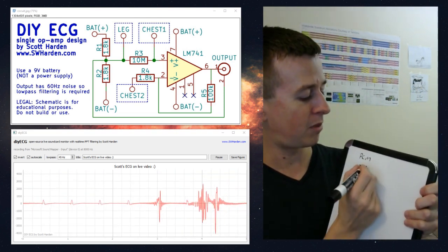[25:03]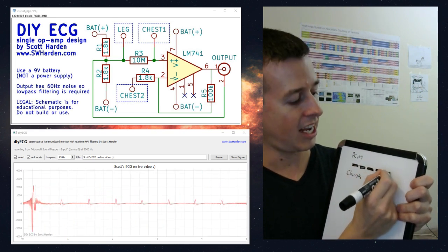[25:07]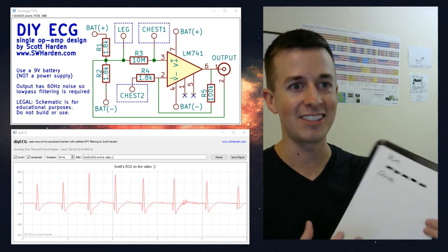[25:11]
So it reads a little bit of a chunk, and I think that's actually called chunk. So the chunk size is maybe 1,000 samples or something like that. It's not very big. But it keeps adding chunks one by one. And it uses a threaded module, so whatever the regular Python program is doing, recording just kind of happens automatically and it doesn't get held up. So you can have other code running at the same time.
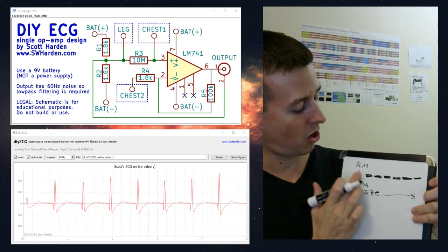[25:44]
So it keeps adding chunks, and when it gets to the max length, I think it might be called max size, something like that. When it gets to the max size, I'll draw an arrow here. So a chunk is one piece, the max size is this. When it gets to the max size, then for every chunk it adds, it removes the old one. So this way there's always the same amount of memory in this memory buffer. And that's kind of the fundamental basis of how it works.
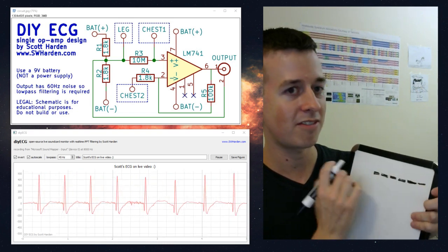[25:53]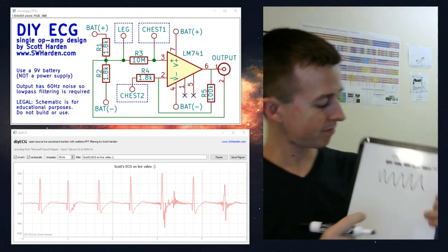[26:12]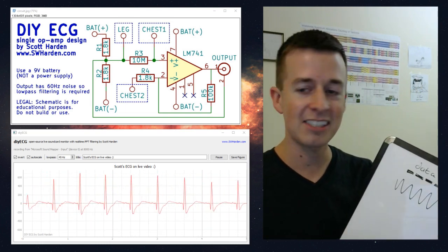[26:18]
So no matter when you ask for it, I call it data, I think. The data variable always has about 5 seconds of audio. So I'll draw that just kind of like this. So it has 5 seconds of audio. So when my software is graphing it, it requests this audio. And before doing the frequency math on it, it does something kind of special to it that causes it to be pinched on the edges.
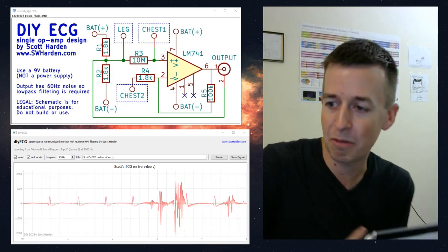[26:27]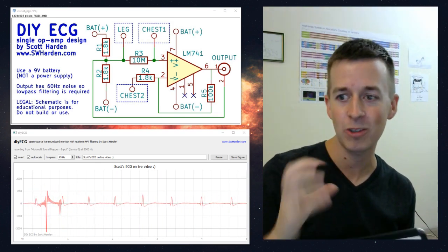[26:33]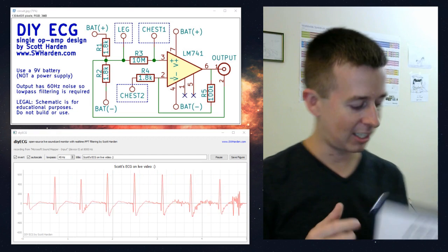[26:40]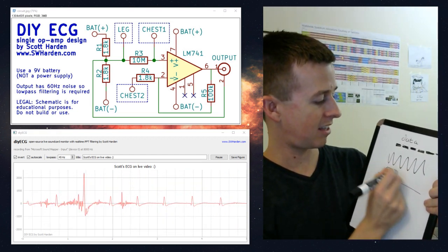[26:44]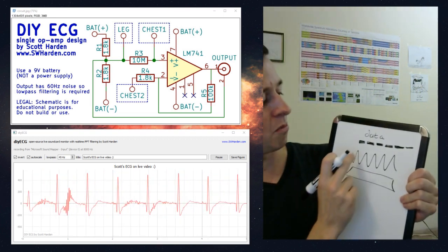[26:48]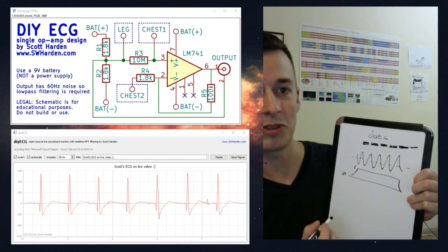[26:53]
And if you look really closely at the ECG that's being recorded right now, you can see that, especially if I make noise, you can see it a little bit better. The signal sort of gets magnified for the first quarter of a second, and then it stays full size, and then it gets pinched off at the end. The way I do that is I make a function like this, and it's actually nonlinear, but I essentially multiply this by this, and this goes from 0 to 1. So then the signal that I do math on looks like this, where the edges are pinched a little bit. And that makes it a little bit easier for the software to get really clear data after we do the inverse FFT, which I'll talk about in a second.
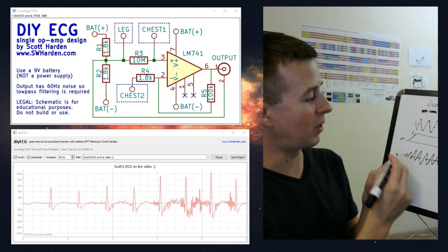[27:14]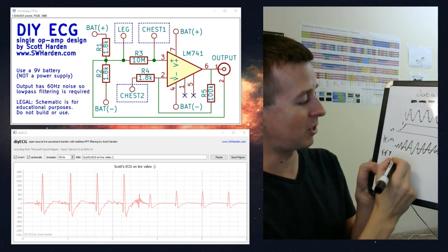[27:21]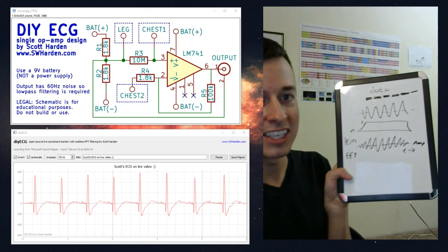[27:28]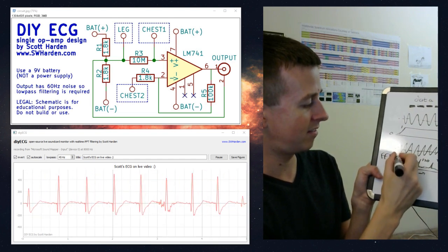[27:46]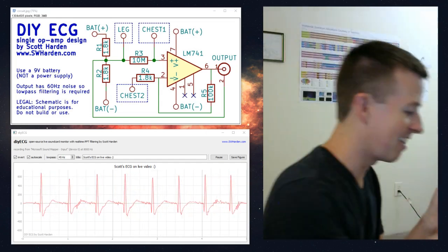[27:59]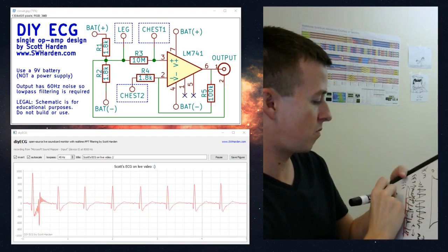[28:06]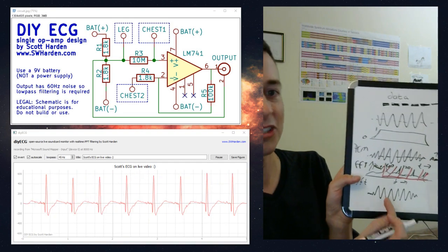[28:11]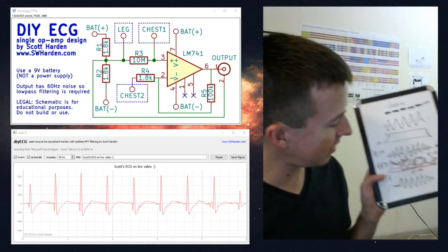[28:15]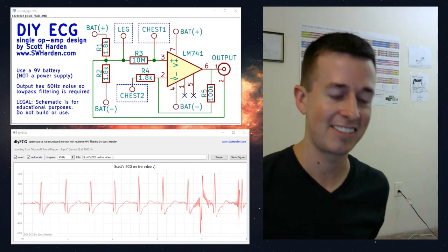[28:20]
I guess from this point, this is still PCM data, I then generate an FFT. So I take this amount of data and I convert it to the frequency domain. So instead of being time versus, I don't know, we'll call it amplitude. Time, amplitude. The FFT is this thing where kind of, we'll call it like that, with a peak at 60 hertz, 120, etc. This is the frequency with respect to power. This is starting to get messy. But then to low-pass filter it, I just set everything above a certain value to 0. So I just chop off all that. Then I take the inverse FFT, so IFFT, and that turns it back into my original signal, just with the high-frequency component removed. And in the case of the ECG, this inverse FFT is a really clear signal.
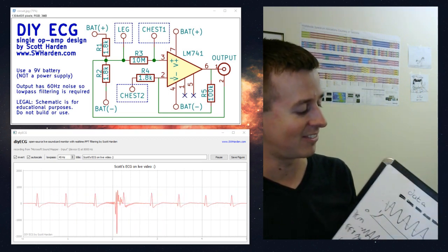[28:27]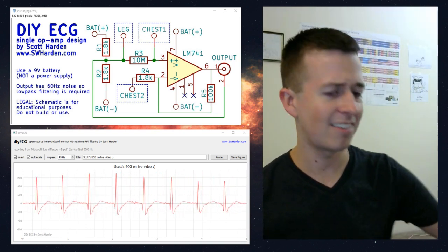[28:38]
So the class I used to do this, I call SWH ear or SW hear, depending on how you read it. And its sole purpose is to provide you sort of scientific access to the last several seconds of audio, regardless of when you pull it. And then I guess that's another issue, is when is it pulled? It's not automatically calculated and processed in the frequency domain as it's recorded. It's only processed as it's being graphed. So the software makes a single graph of the last 5 seconds of audio with all that frequency stuff, math being done. And then it gives the system about 1 millisecond to redraw itself, and then it does it again.
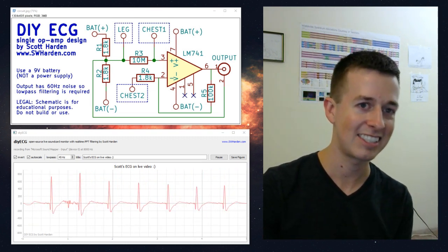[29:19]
So even if we were to record at a slower sample rate, it would potentially analyze the data faster than it's being recorded. That's not the way it's actually working here, but it doesn't really matter. The point is that the FFT is being made every time it's graphed, every time it's seen. It's not being calculated as it's being recorded.
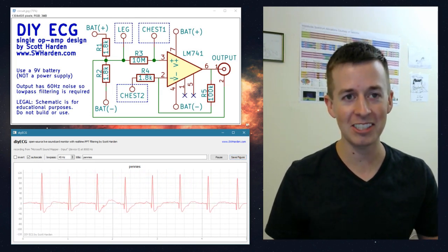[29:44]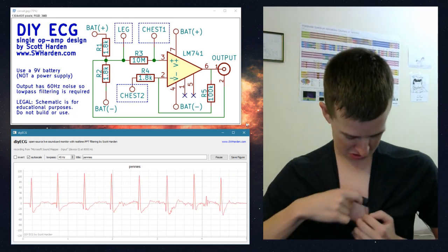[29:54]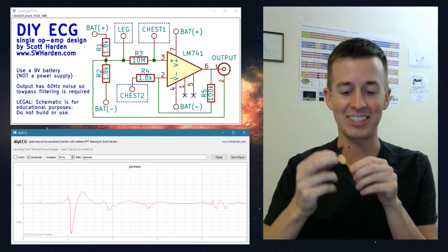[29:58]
Okay, I couldn't help myself. I had to hook up pennies. So right now, these electrodes are pennies. This is a penny that's attached to my body, and it's actually doing a really good job. I'm going to take a picture of it here for the website. I'm going to wait till all the noise is gone. There we go. So these are just pennies. I'm not even using like the conditioner I talked about. And full disclosure, I did lick the penny before putting it on, so that helped a little bit. But yeah, these are just pennies that I attached to my body with electrical tape.
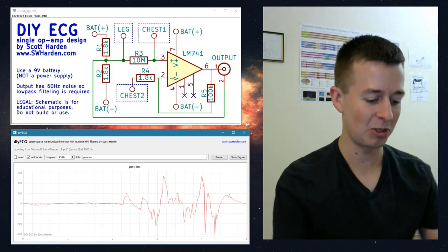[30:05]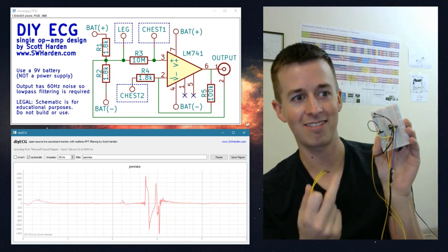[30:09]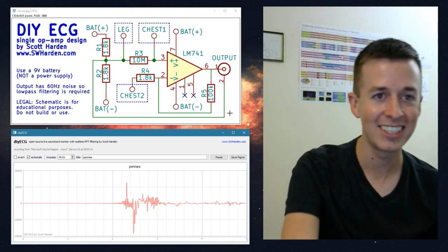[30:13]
So the, what do you call it, the muscle simulators are kind of a lateral move. And just like before, I hooked up the pennies, the yellow wires, just straight to the breadboard. So pennies work pretty much just as well.